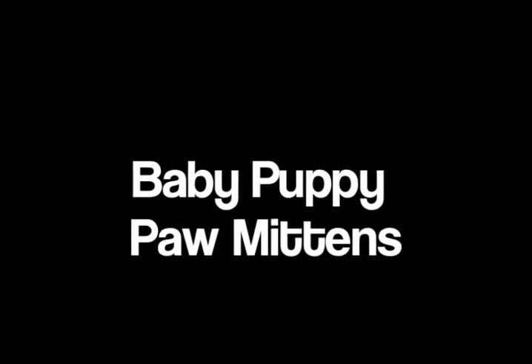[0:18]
AMM 381 Apparel Production, Winter 2013 with Dr. Senanayaka. Michaela Ard and Chloe Chu, Julie Ruffalo and Sarah Howell. We made baby puppy paw mittens.
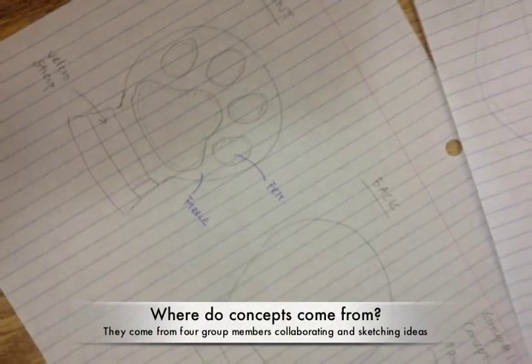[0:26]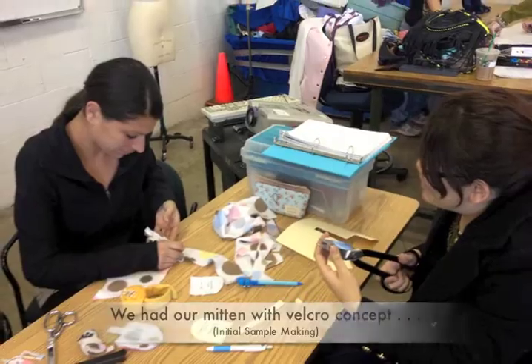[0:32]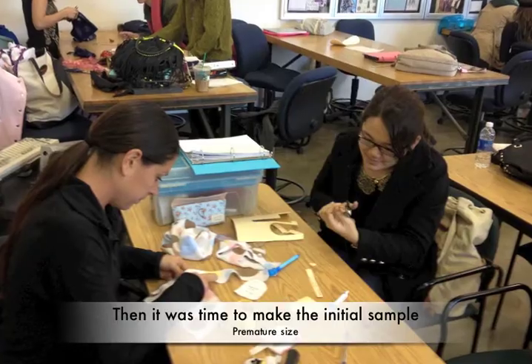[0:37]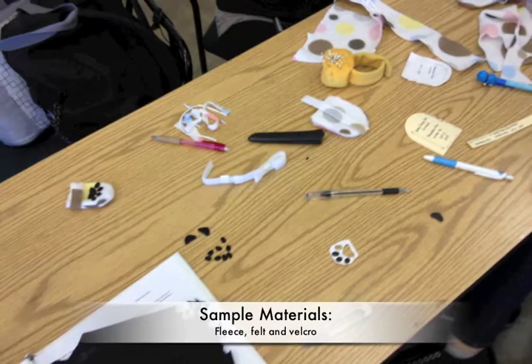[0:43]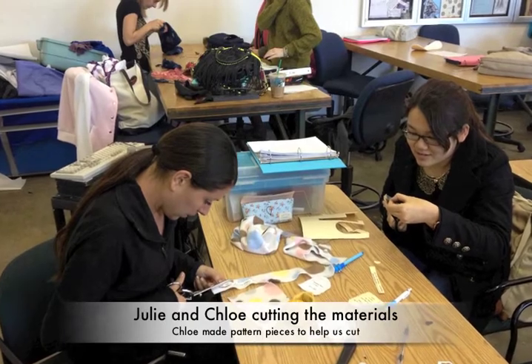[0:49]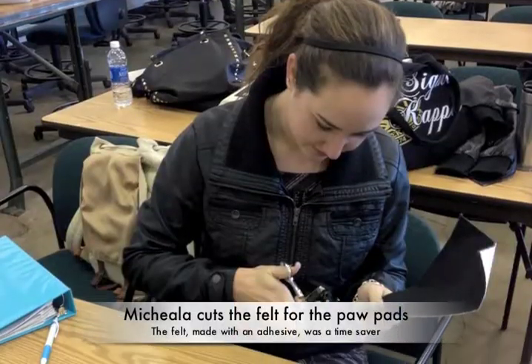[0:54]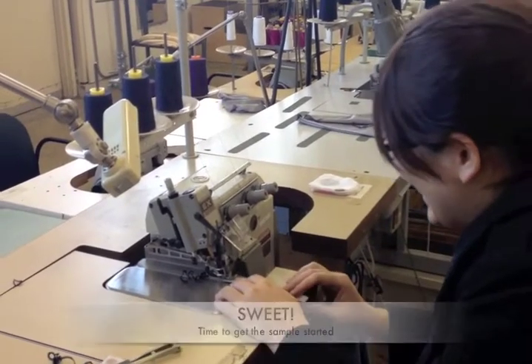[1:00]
Product concept development. We wanted to make a mitten using Velcro instead of elastic because the Velcro is adjustable and will fit the baby's wrist better. We researched the dimensions of mittens online, and then we drafted the patterns for normal size and preemie size baby mittens. And then we gathered materials from home, including fabrics and trims, and we constructed the sample at school. And these are pictures of us working on the patterns and cutting out the paws from the felt pieces. Sweet! You're doing it.
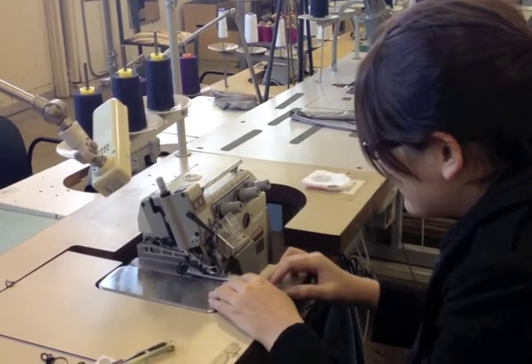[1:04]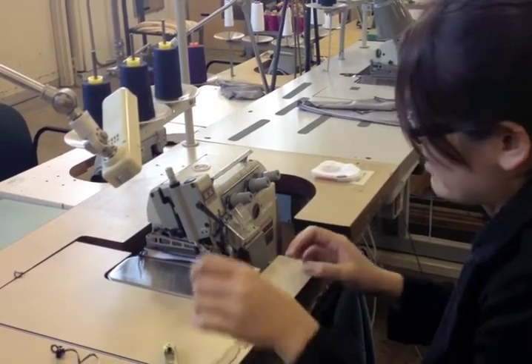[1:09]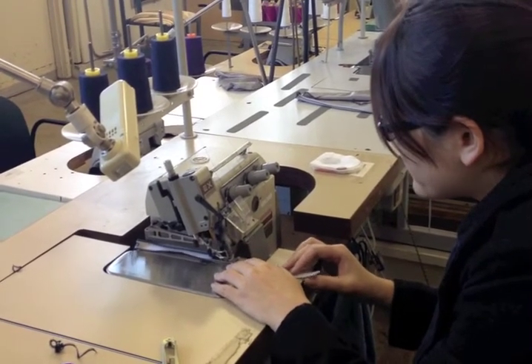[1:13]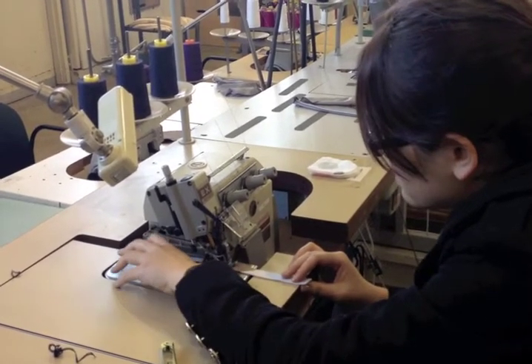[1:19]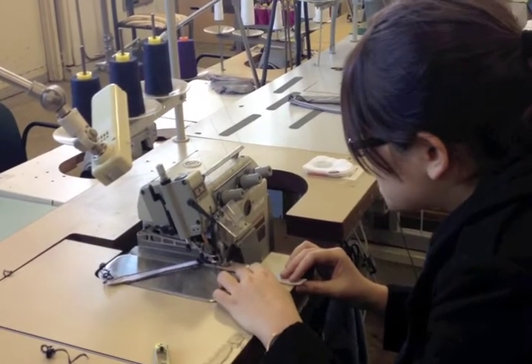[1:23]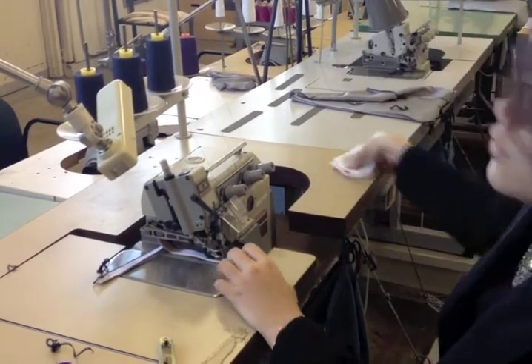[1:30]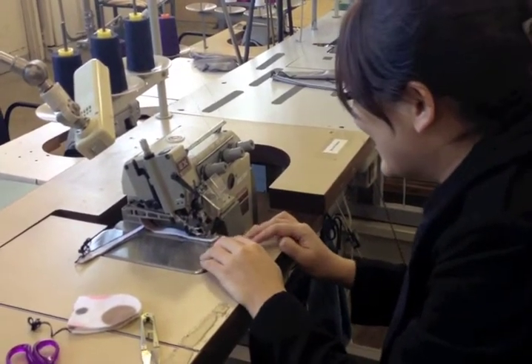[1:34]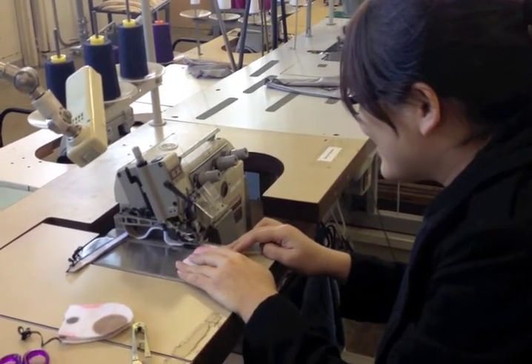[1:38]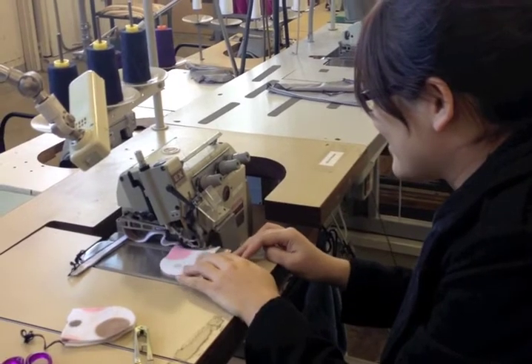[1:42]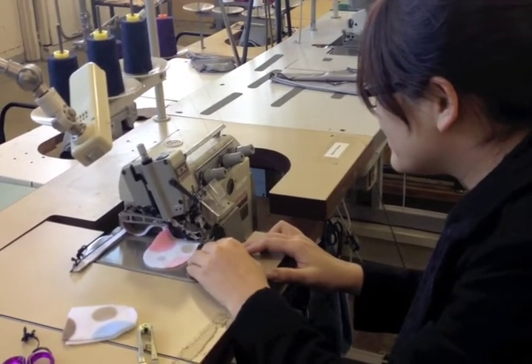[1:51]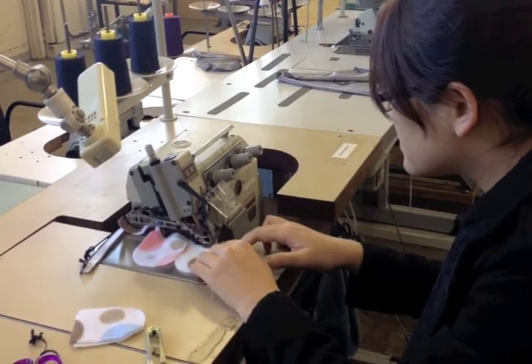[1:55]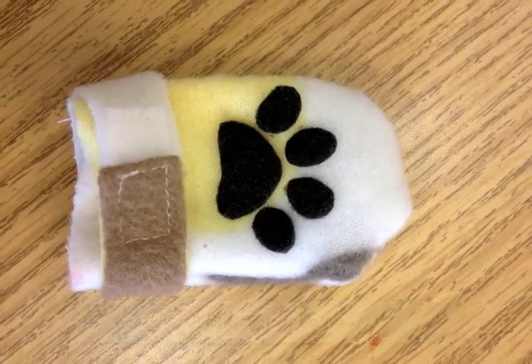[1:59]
In this stage of making the first sample, we used the Merrow hand machine to overlock the edge of the strap. Next, we overlocked the hem of the mitten tops and bottom. Overlocking the pieces one after another proved to be a very efficient strategy because it saved time and thread. This was our primary sample.
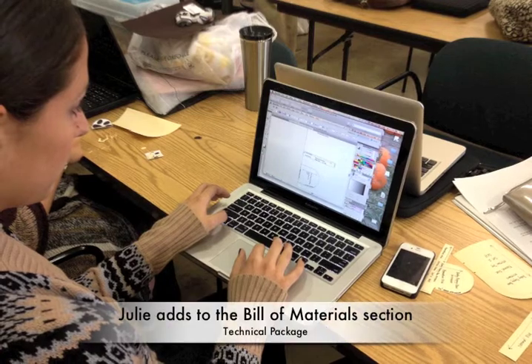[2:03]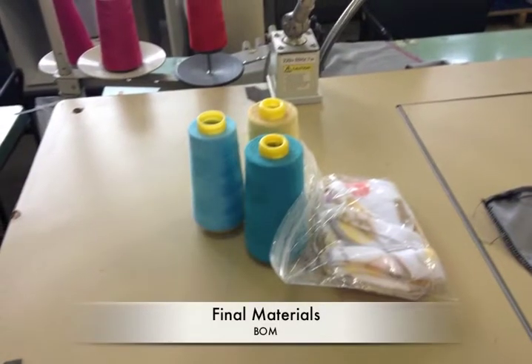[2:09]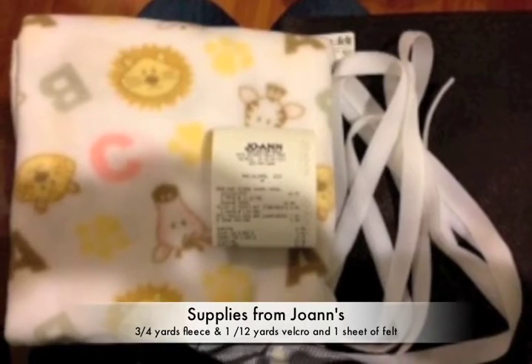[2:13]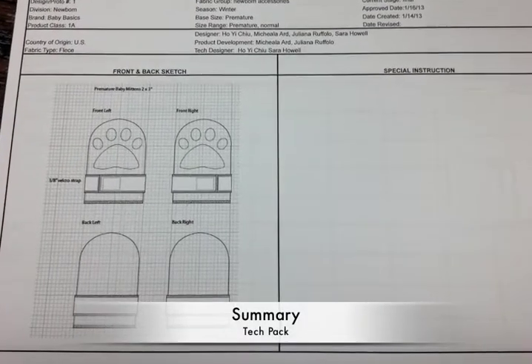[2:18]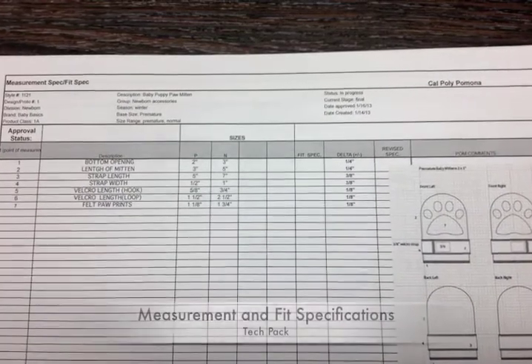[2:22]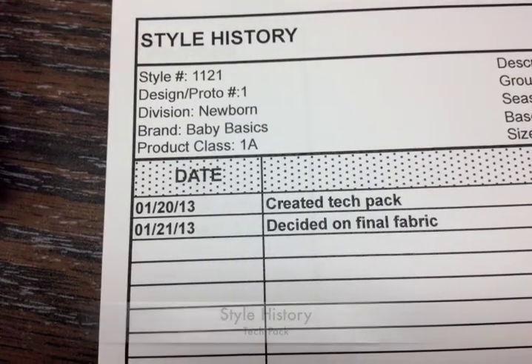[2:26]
Tech Pack Creation. Here we are working on the technical package. This is the bill of materials page where we place the trace patterns. The BOM page also included the materials we used. Additionally, the Tech Pack included pages for the summary, a measurement and fit specification page, garment assembly, and style history.
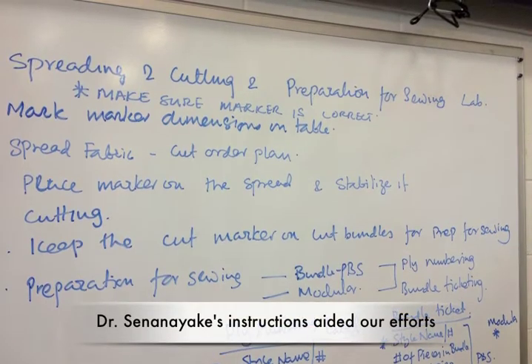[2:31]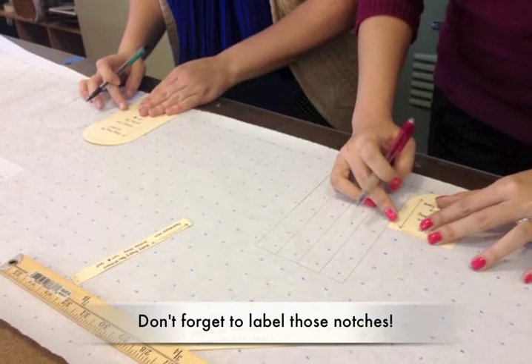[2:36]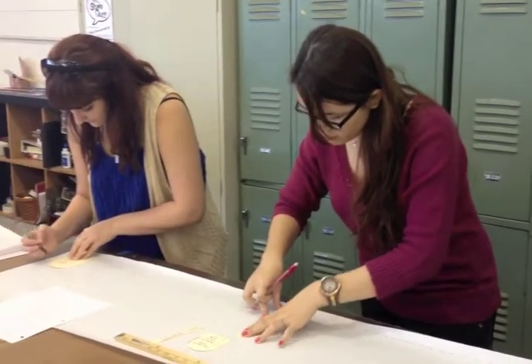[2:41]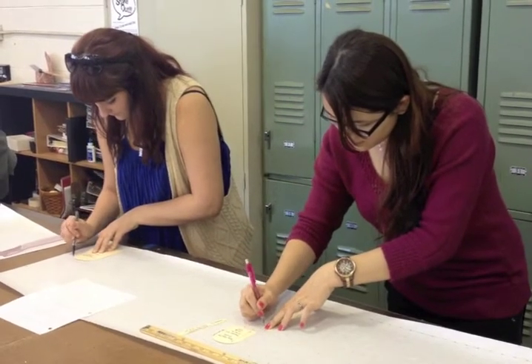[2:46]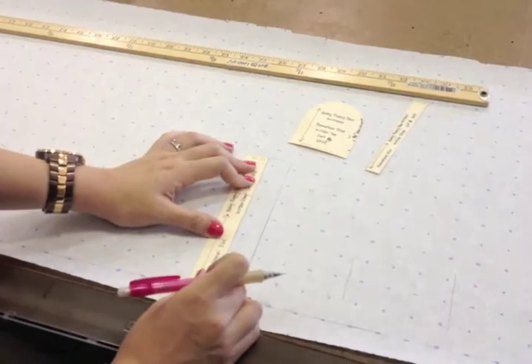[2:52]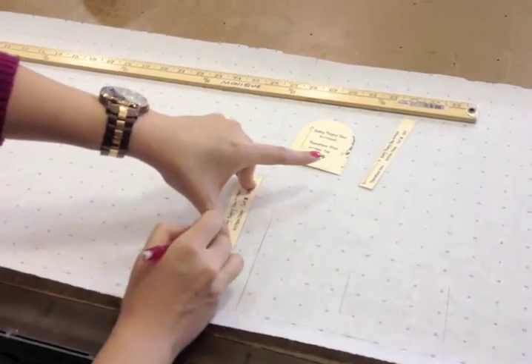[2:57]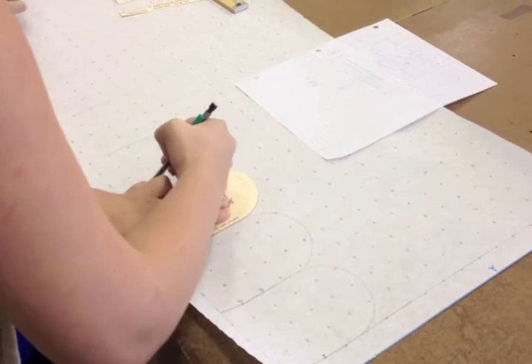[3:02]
Marker making. After Dr. Senanayaka approved our samples for the normal size and preemie size, we moved on to creating this marker for the mass production. The most efficient cut order plan includes 3 plies of fabric and 2 premature size and 2 normal size patterns on the marker. For each mitten, we have pattern pieces for mitten top, mitten bottom, and strap. We estimated that our marker utilization or efficiency was about 75%.
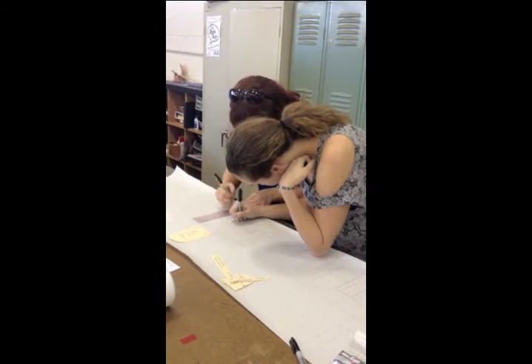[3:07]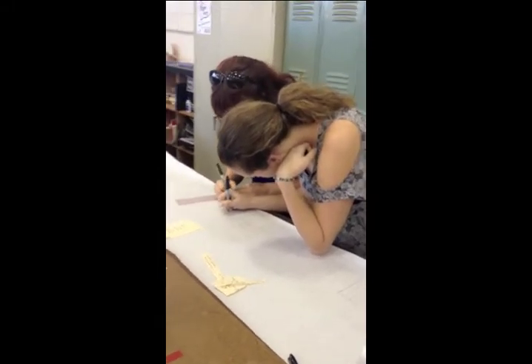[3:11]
After we traced all the patterns on the marker, we labeled each piece with the size, ply number, and piece name.
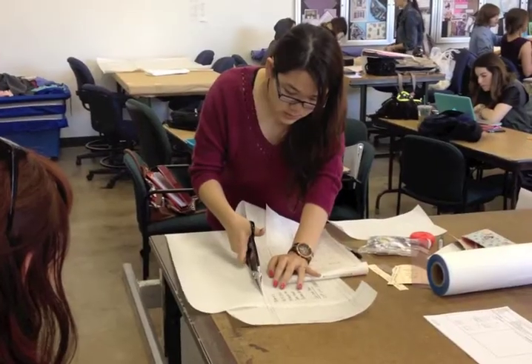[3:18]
When you're spreading, if it is not how many, you can keep a little bit more. You know what I think it is?
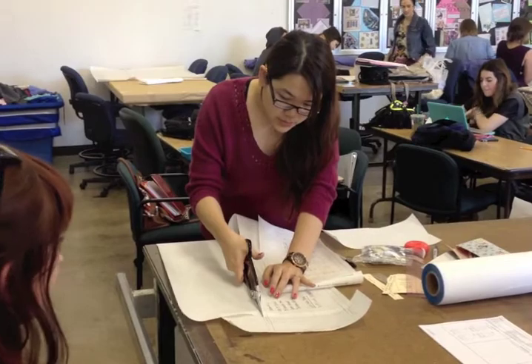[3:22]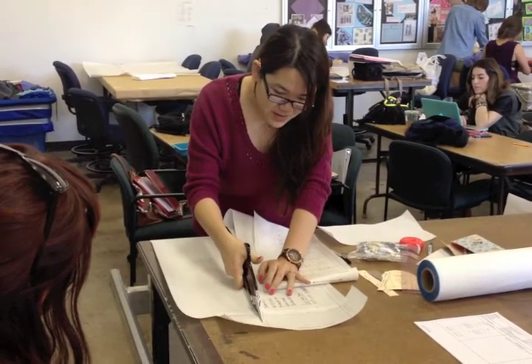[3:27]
When we finished labeling and tracing the patterns, we cut the marker from the paper and it's ready to be used.
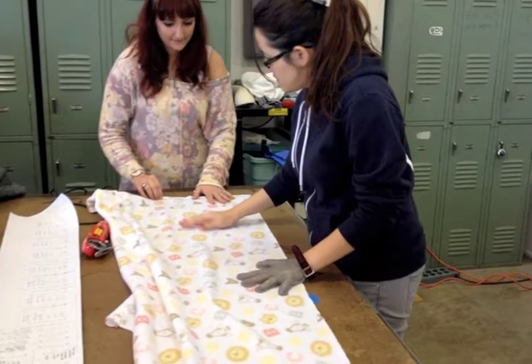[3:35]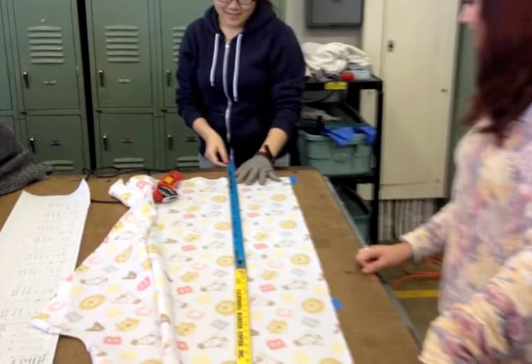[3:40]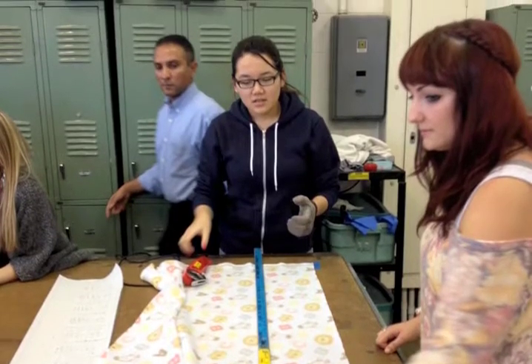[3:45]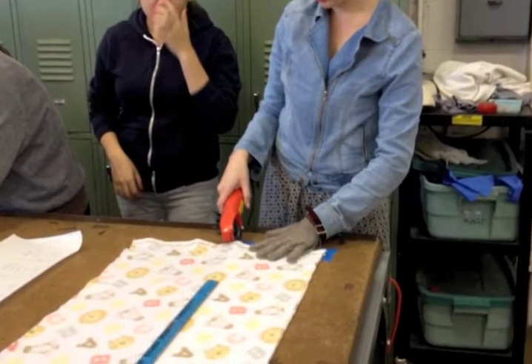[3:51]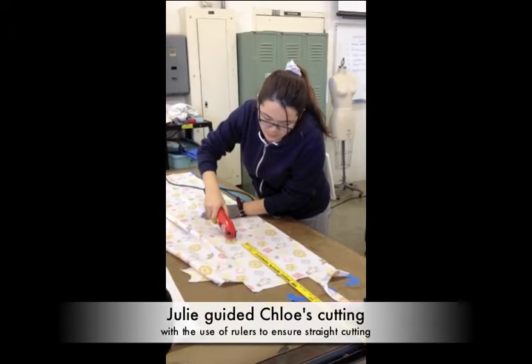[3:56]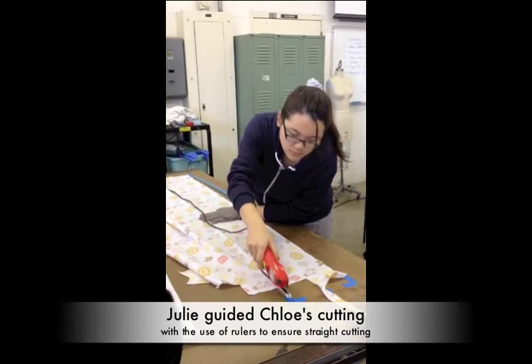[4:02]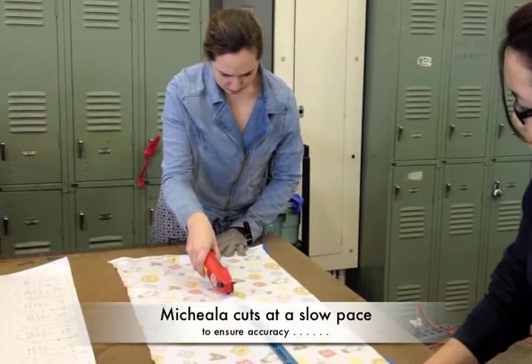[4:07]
Spreading. We laid out 3 plies of fabric, then we used a ruler to smooth out the fabric so that there were no wrinkles. Dr. Senanayaka oversaw the spreading process. The spreading process also involves cutting the fabric into different plies. We needed to cut our fleece into 3 plies.
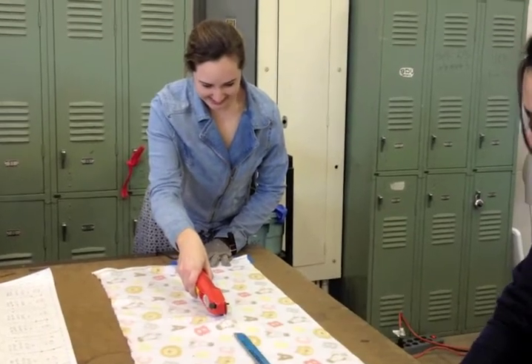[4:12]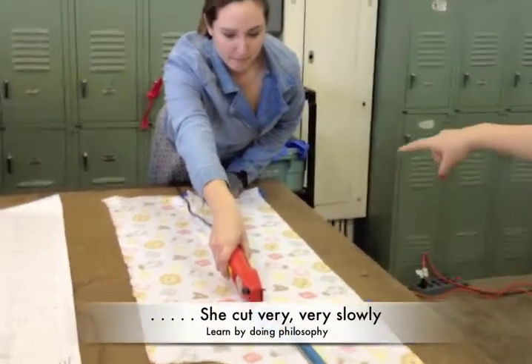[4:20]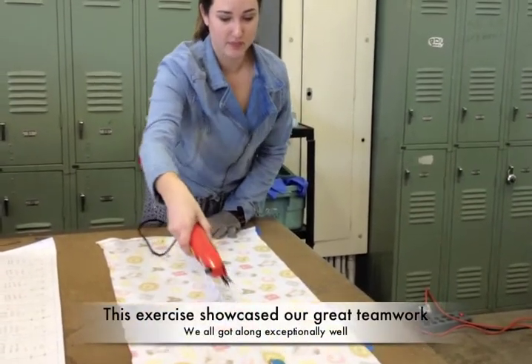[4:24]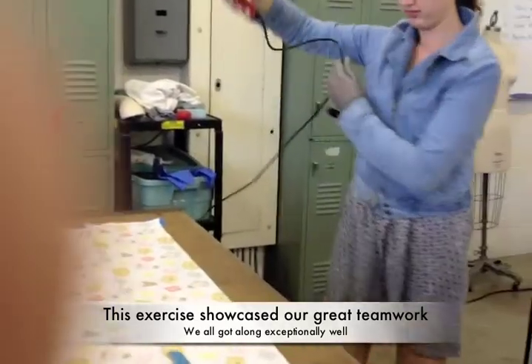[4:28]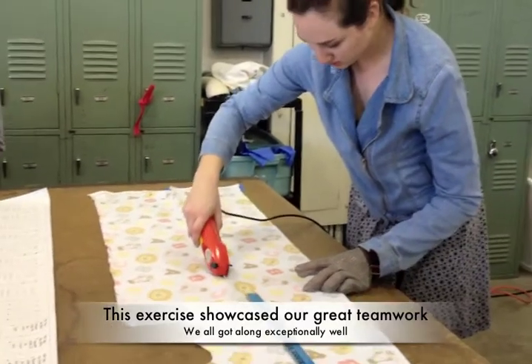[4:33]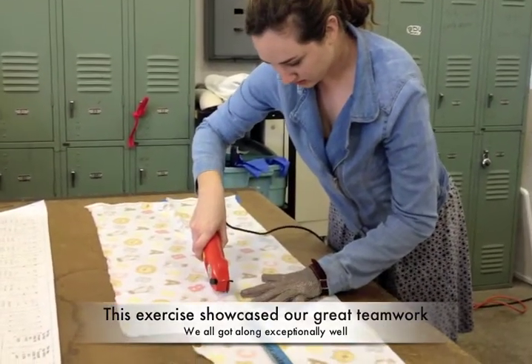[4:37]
Usually with the metal thing it will hook it up, so I'm trying not to. Press it on the board. This is too long to go around. Yeah. If it's too long, go around this side. Yeah. On this side of the board. Okay. Pretty good so far. Thanks. Not that bad. It's pretty fun. Okay. Yeah.
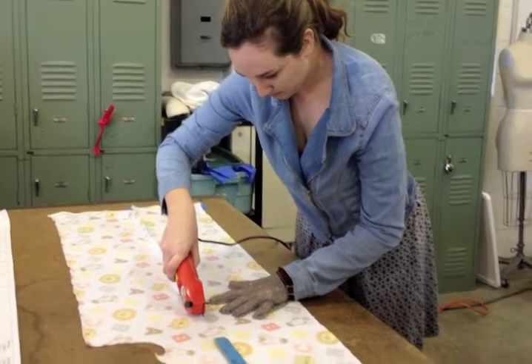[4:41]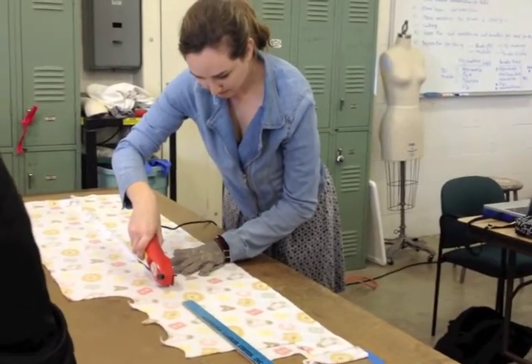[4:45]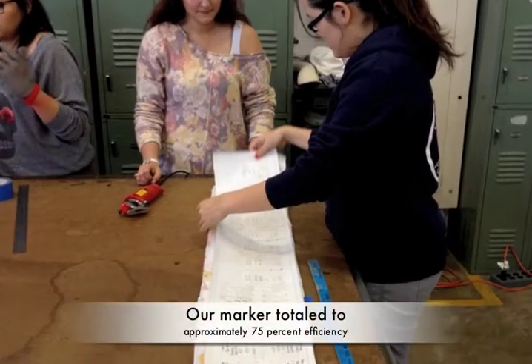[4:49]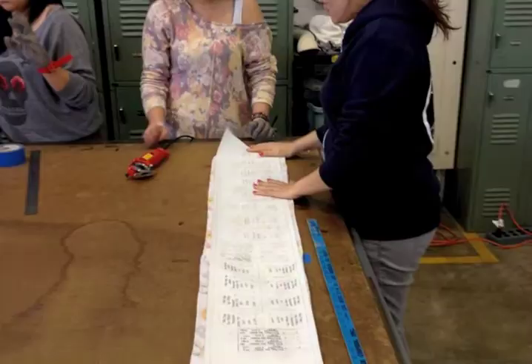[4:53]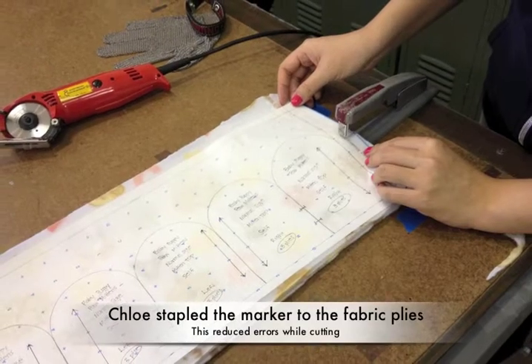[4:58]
We then placed the marker over the 3 plies and stapled it to the fabric.
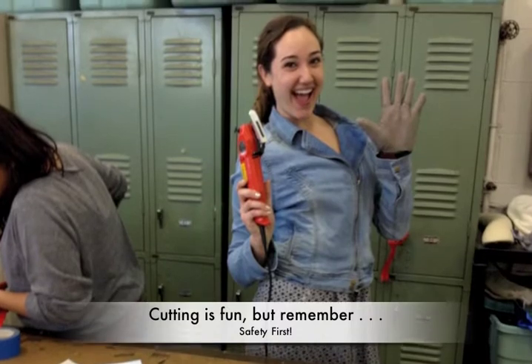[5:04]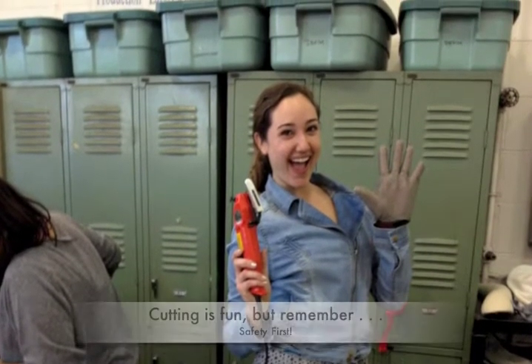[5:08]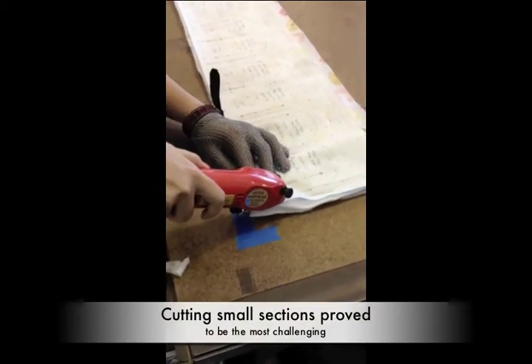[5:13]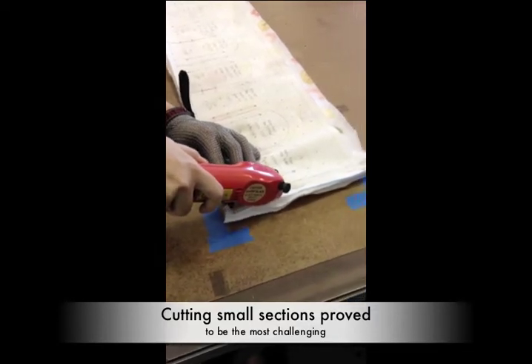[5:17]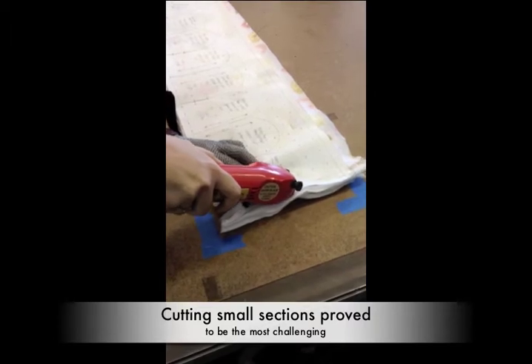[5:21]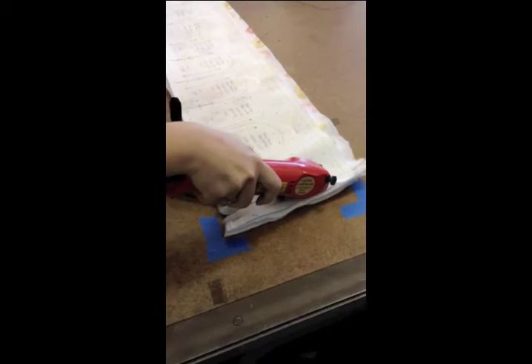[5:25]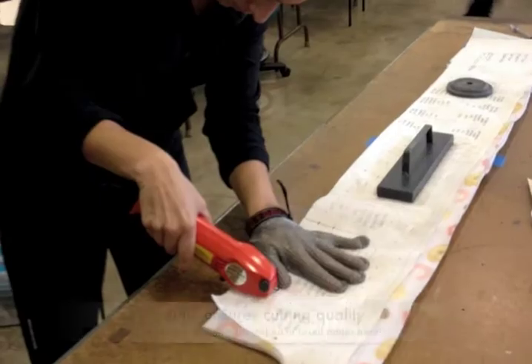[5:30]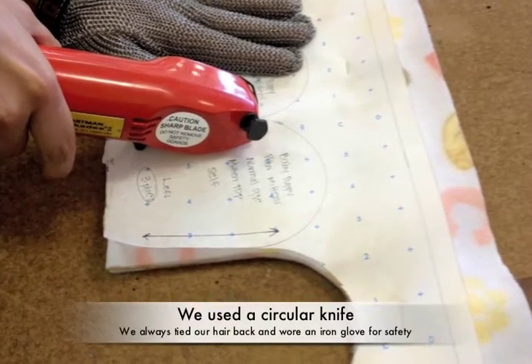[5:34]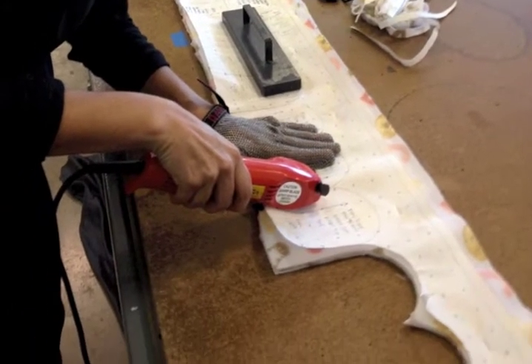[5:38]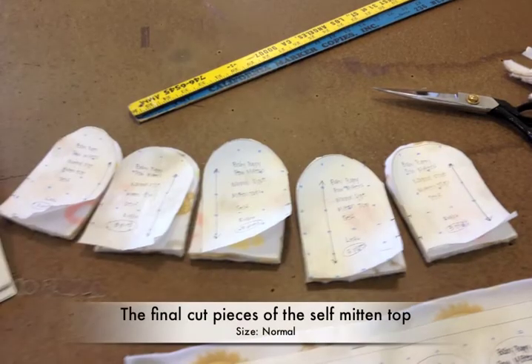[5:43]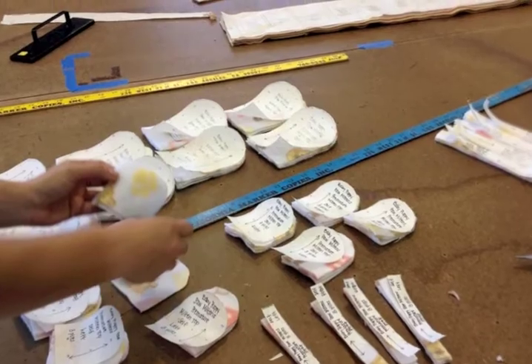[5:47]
Cutting. Once we began the cutting process, we used an iron glove for safety. We used a circular blade for our cutting processes. After the initial cutting, we began to cut the individual pattern pieces. Julie is pictured cutting the normal size mitten top of the baby puppy paw mittens. We left the labeled markers on each piece so organizing the bundles would be even easier.
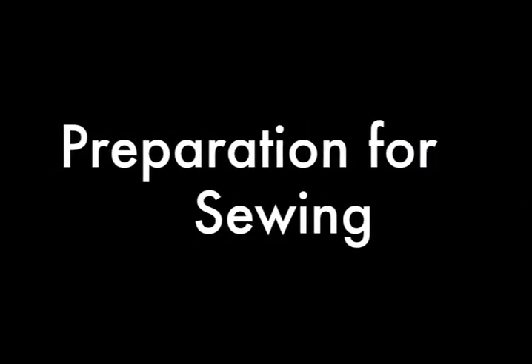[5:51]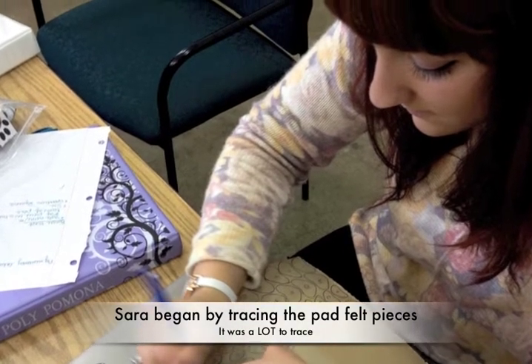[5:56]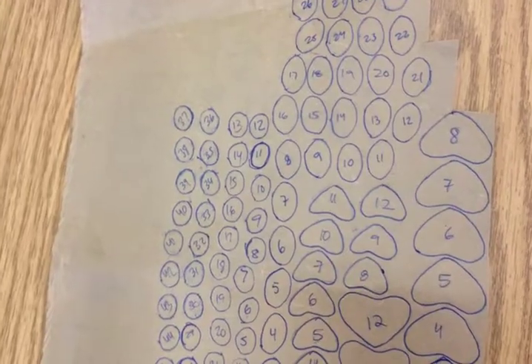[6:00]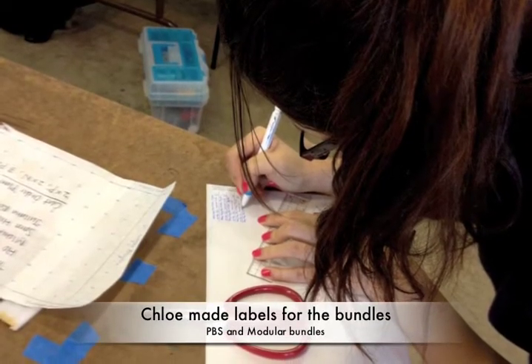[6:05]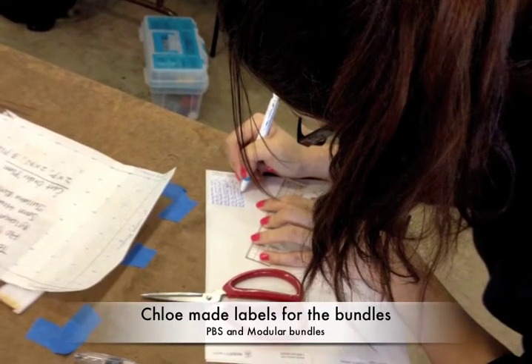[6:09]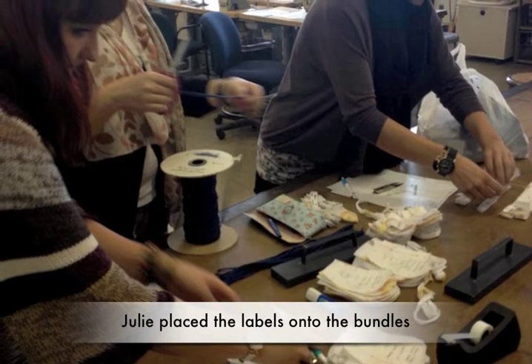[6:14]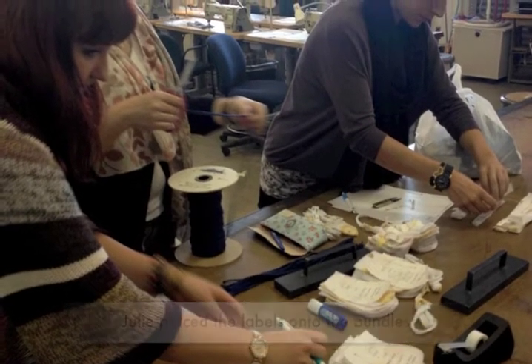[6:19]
Preparation for sewing. Here we are tracing the 96 felt pad pieces. We made labels for the 6 modular bundles and the 12 PBS bundles. PBS were labeled with a style name and number, ply number, piece name, and size. The modular bundle tickets were labeled with style name and number, number of pieces in a bundle, name of piece, size, and operation sequence.
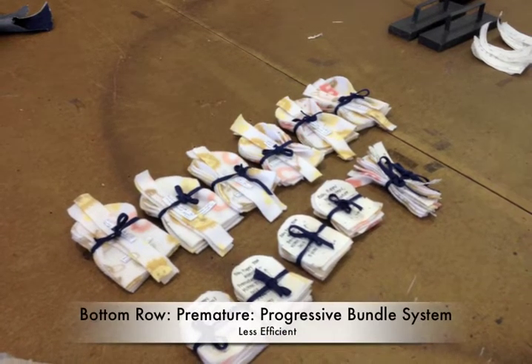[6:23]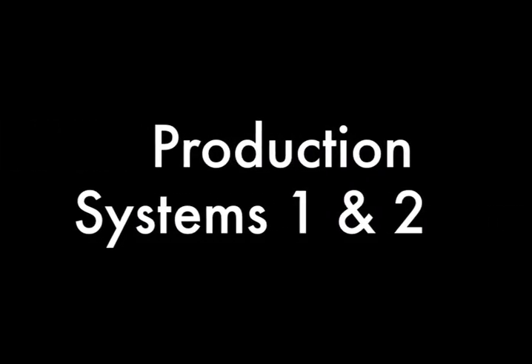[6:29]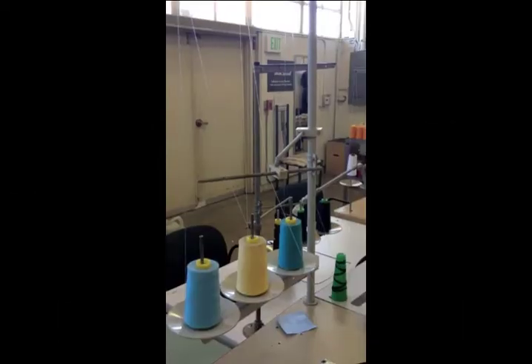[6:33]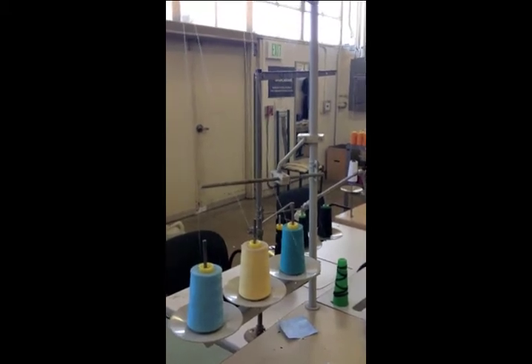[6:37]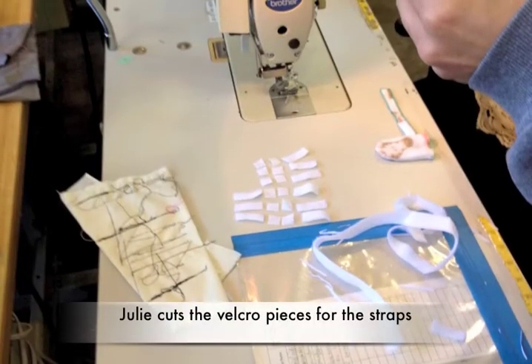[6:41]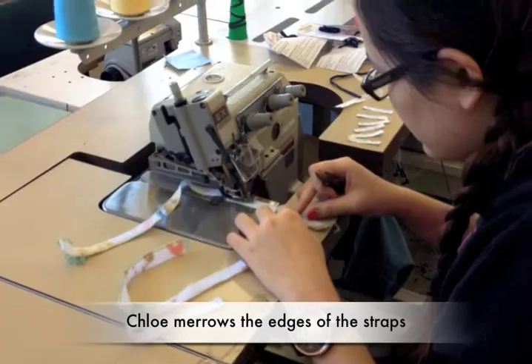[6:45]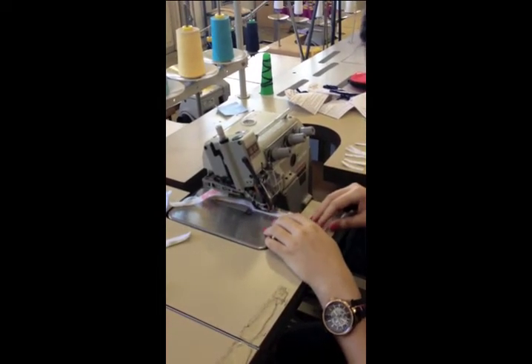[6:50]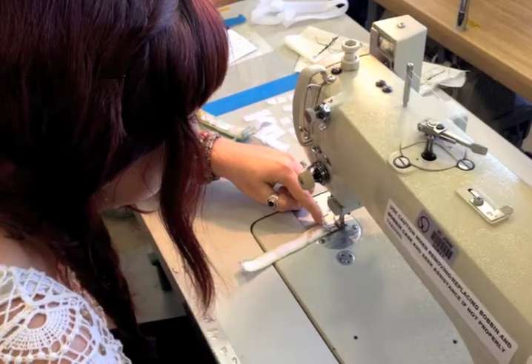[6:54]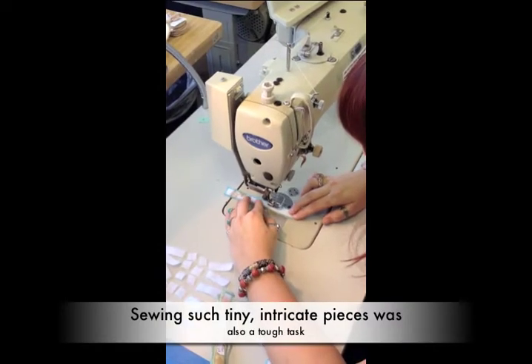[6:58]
Production Systems 1 and 2. We prepared for the PBS system by examining the samples and cutting the Velcro pieces for the straps. For the first step, Chloe overlocked the edges using the 3-thread overlock on the Merrow machine. Next, Sarah attached the loop and hook Velcro to the front and back of the straps on the industrial sewing machine.
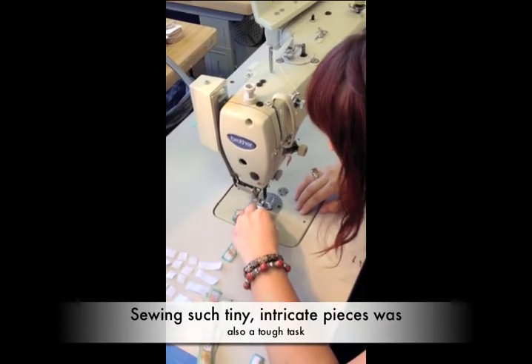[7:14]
My backpack looks stupid. First when you do the first one, you just sew it, and then you sew a little bit in the back tack, and then after you fold it, yeah. Are you videoing me? She can hear everything I'm saying.
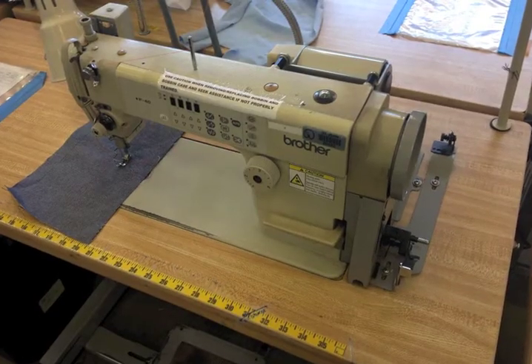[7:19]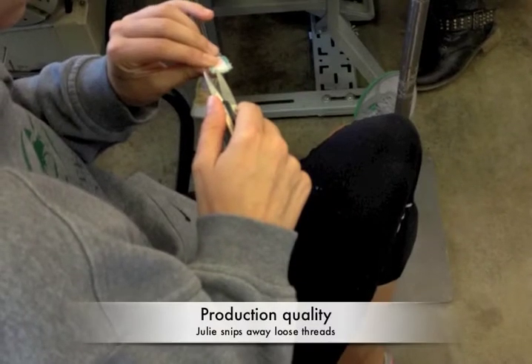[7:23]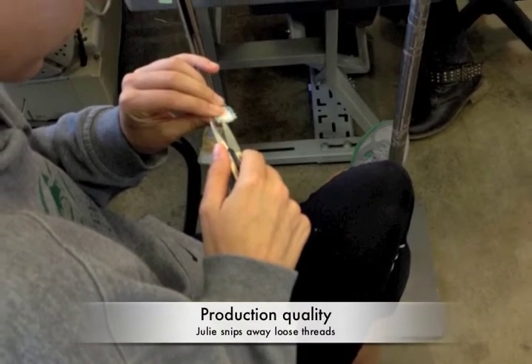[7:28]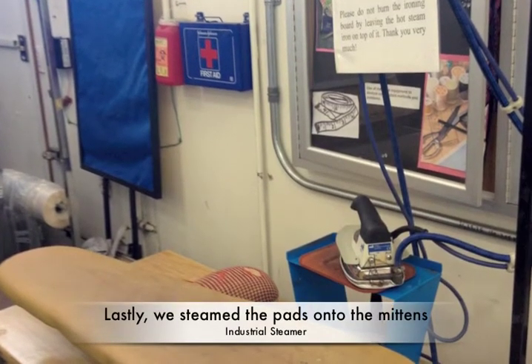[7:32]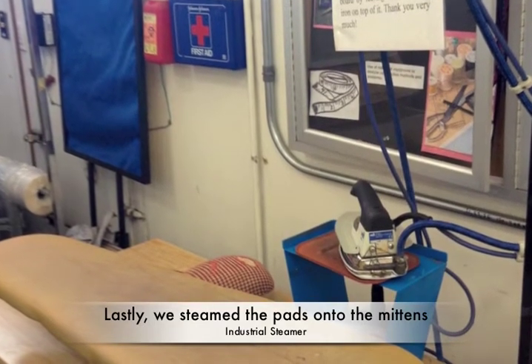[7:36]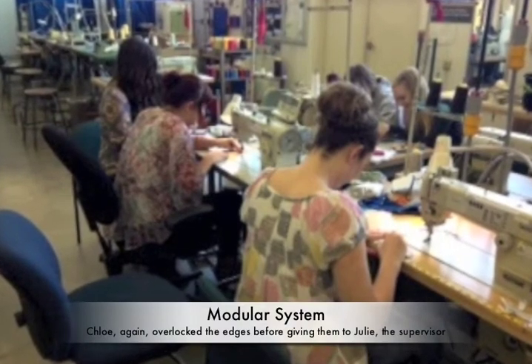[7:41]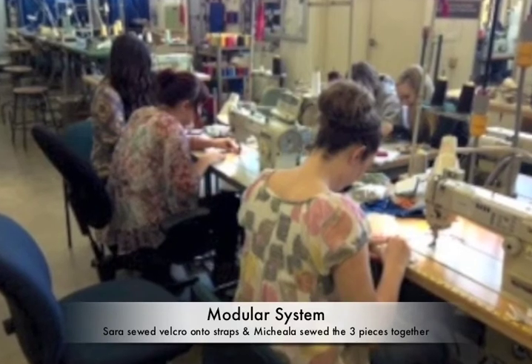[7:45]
After that, Michaela attached the strap to the top and bottom mitten pieces together on the industrial sewing machine. Julie cut excess thread to ensure product quality. Then Sarah applied the adhesive felt pad pieces to the mitten top with the steamer. During the modular system, a similar sequence of events occurred. The only difference was that we produced our product in an assembly line fashion, which was much more efficient than the PBS system.
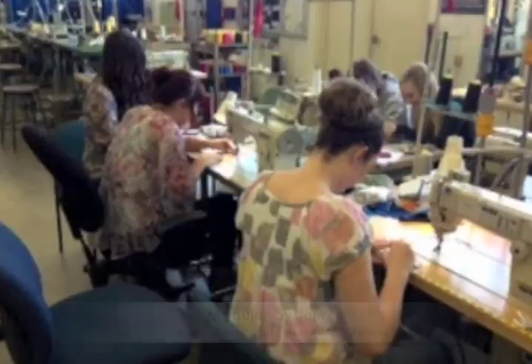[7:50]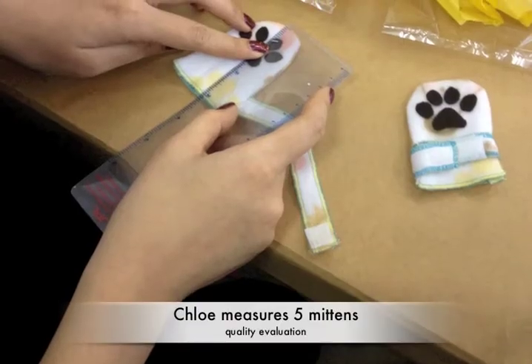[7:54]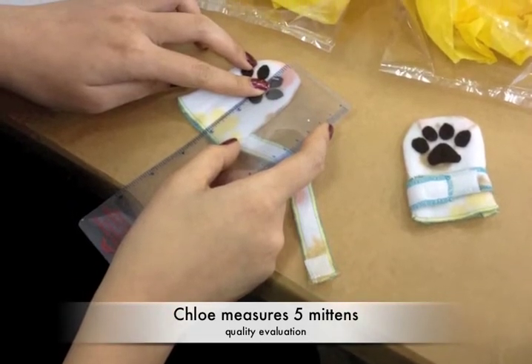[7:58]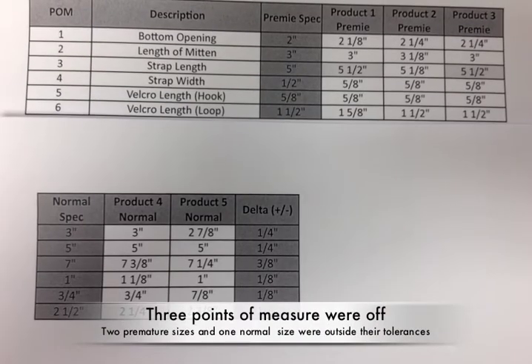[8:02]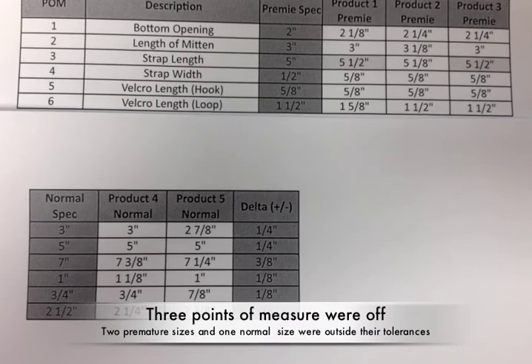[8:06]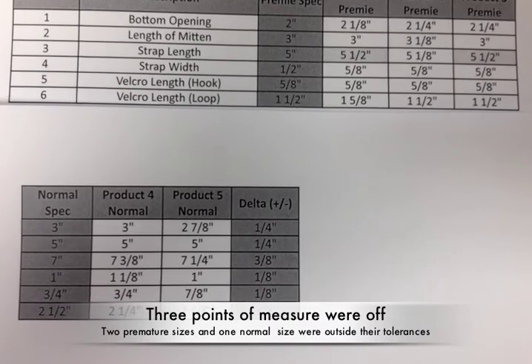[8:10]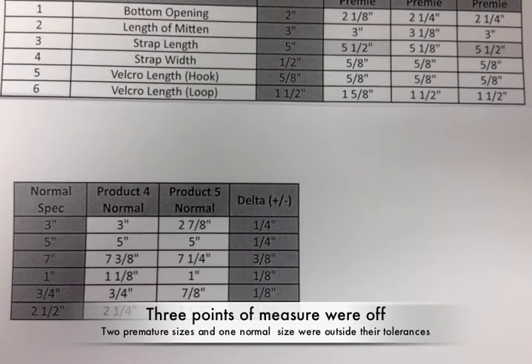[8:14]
Quality evaluation. After we finished sewing all the mittens, we pulled out 5 samples, including 2 normal size and 3 preemie size, to check the quality. We recorded the point of measurements for each mitten and compared them to the original spec from the tech pack. There were 2 preemie strap lengths and 1 normal Velcro length that were outside the tolerance.
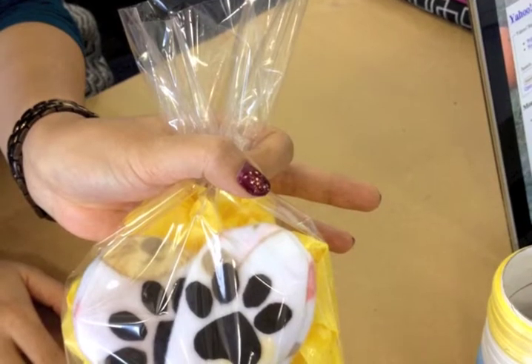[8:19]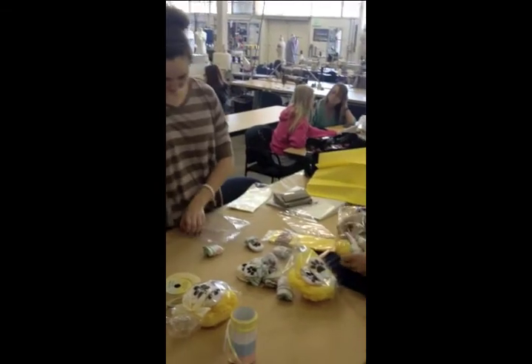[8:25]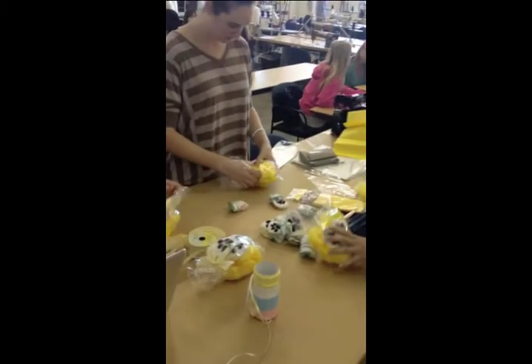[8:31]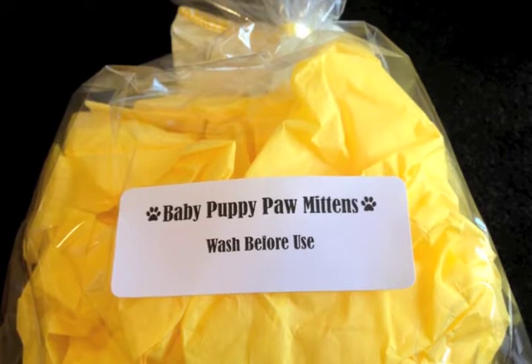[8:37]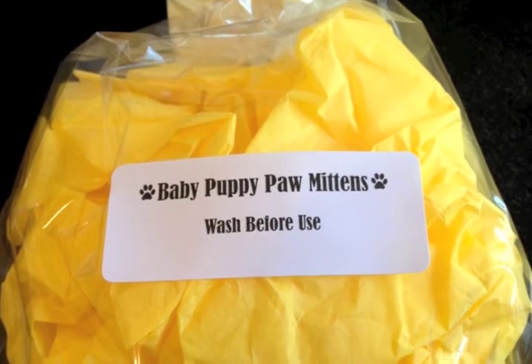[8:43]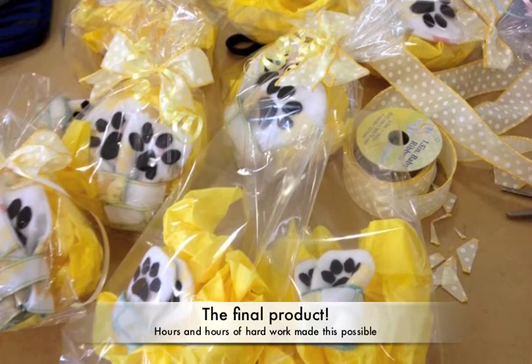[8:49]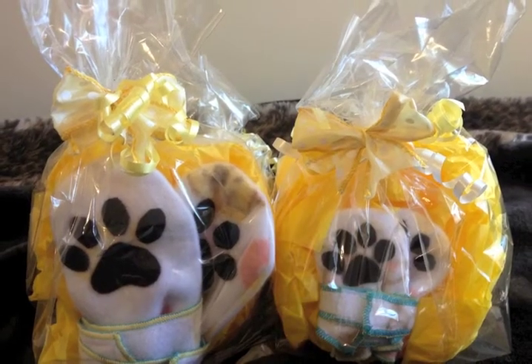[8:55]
Packing. We packaged each pair of mittens in plastic bags with yellow tissue paper. We tied the bags with yellow and white ribbons and bows. We then placed a label on the back of each bag that instructed the user to wash before use. And after 10 weeks of hard work, our product is now complete. The normal and preemie size mittens were ready to be donated.
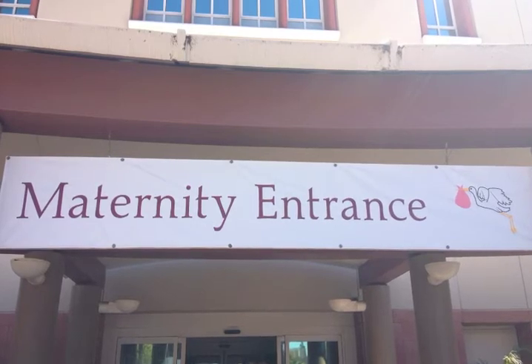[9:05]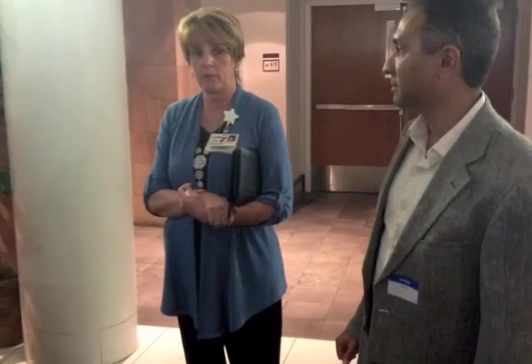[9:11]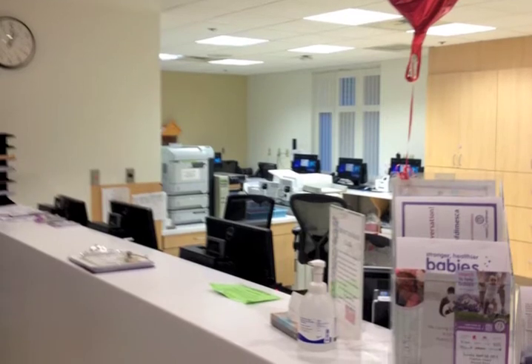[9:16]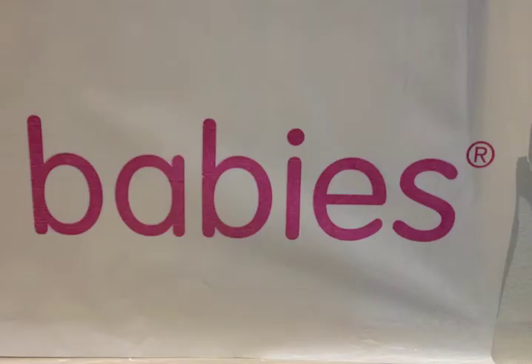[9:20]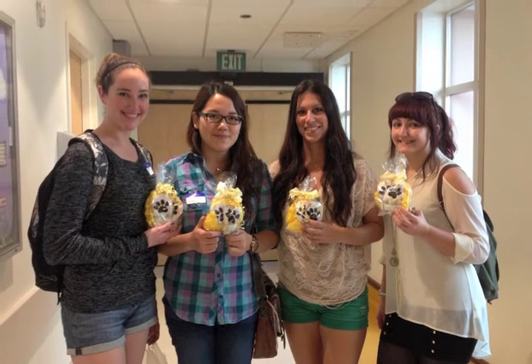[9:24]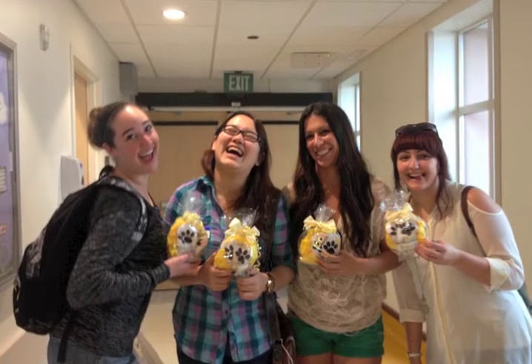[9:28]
Delivery. On March 11th, we arrived at the Pomona Valley Hospital to donate our products. Linda, a market researcher for the hospital, led our class to the neonatal intensive care units, where we gave our mittens to moms and nurses on the various floors. Knowing our baby puppy paw mittens are actually being used by families made this fun, time-consuming production experience all the more validating.
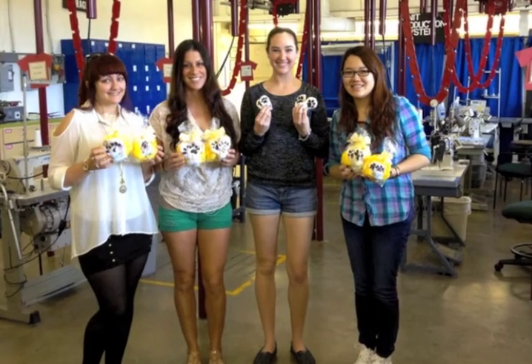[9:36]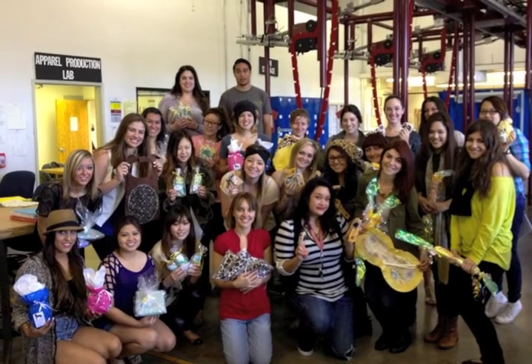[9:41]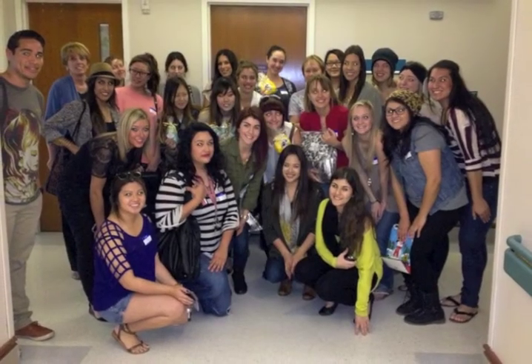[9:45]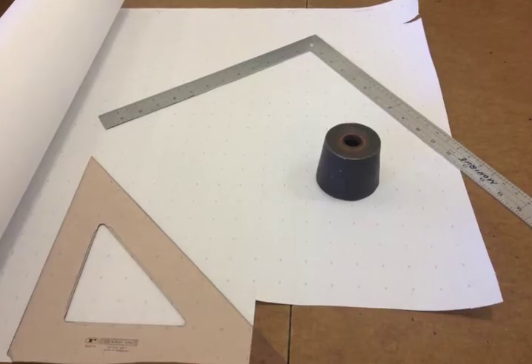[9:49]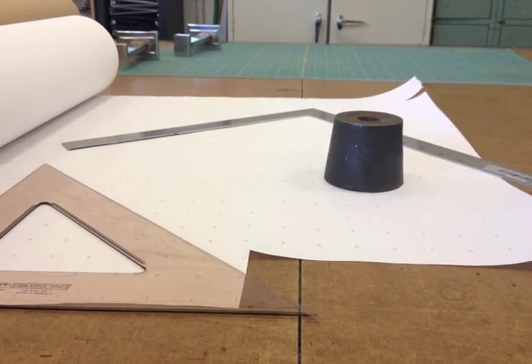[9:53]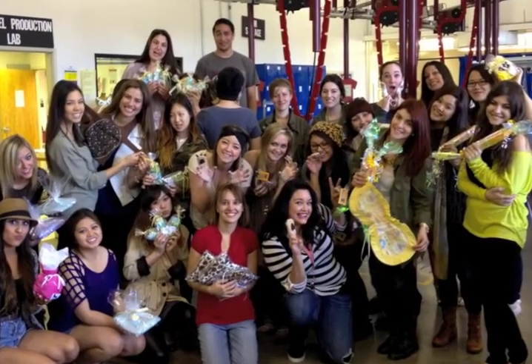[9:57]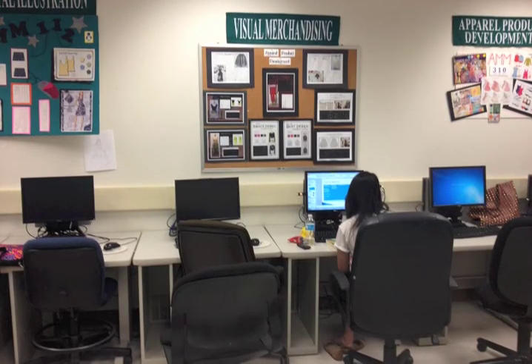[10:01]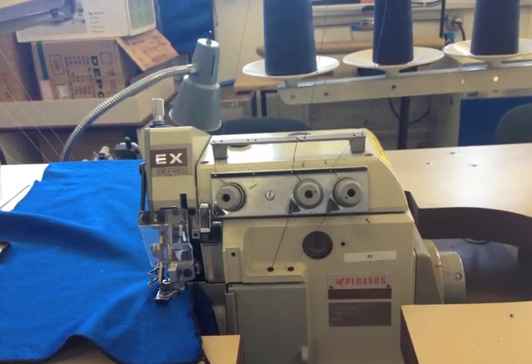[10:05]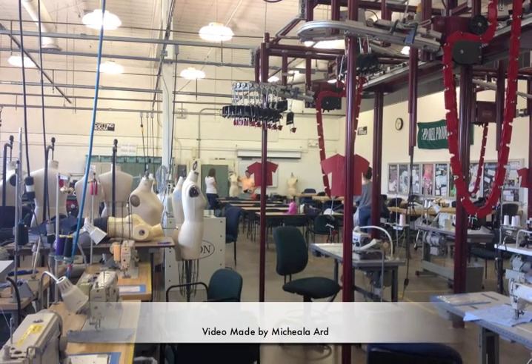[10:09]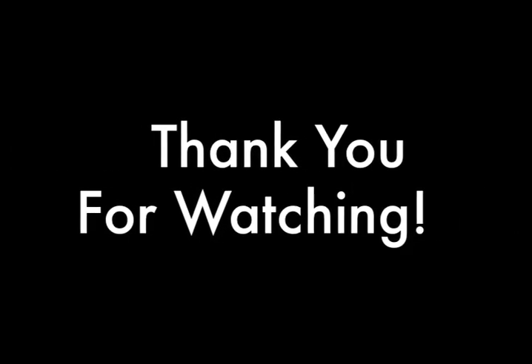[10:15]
What we learned. Throughout the course of AMM 381 apparel production, we learned firsthand about the steps necessary within mass production. We learned about time management, cut order planning, how to prepare different bundles before sewing, and inline quality control. We also honed skills we had covered in previous courses, such as creating tech packs with Adobe Illustrator and sewing 3-thread overlock and 301 single needle lock stitches on the machines available in the AMM production lab.